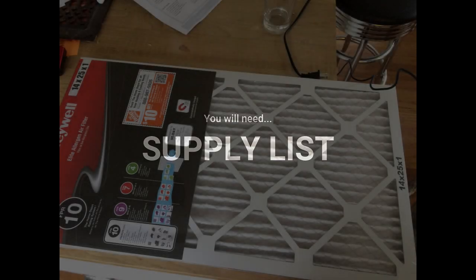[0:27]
If you were inspired to make masks for the COVID-19 workers, I wanted to give you some things to consider and a how-to guide. The mask has some ability to filter virus and bacterial size particles. I am an orthopedic surgeon, and I will give you some of the scientific articles and information that led to these recommendations. And at the end, of course, a disclaimer.
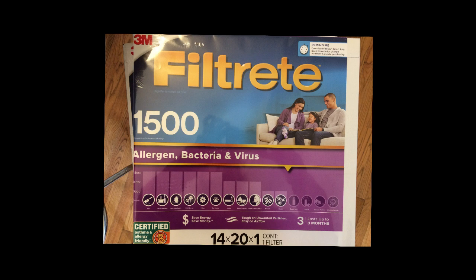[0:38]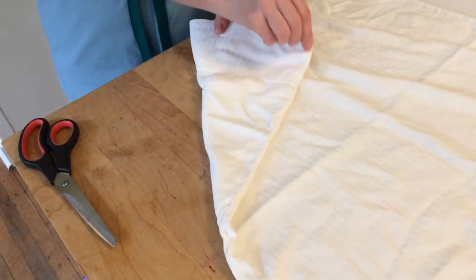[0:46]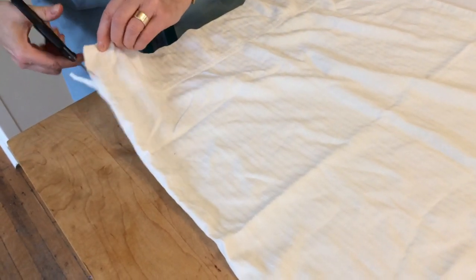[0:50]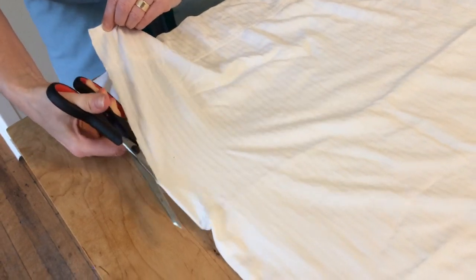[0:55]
Supply list. I will give you a formal list at the end, and you can download it from our website. You will need an HVAC filter, the kind you use for air conditioning vents. I recommend the MERV 12 to 14 or FPR 9 to 10 or 1500 MPR rated filter, like the two that are shown. You will also need some cotton material. I recommend a light colored 100% cotton pillowcase, like this one works well.
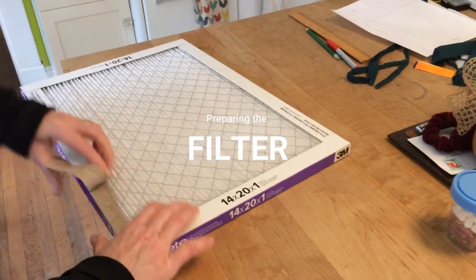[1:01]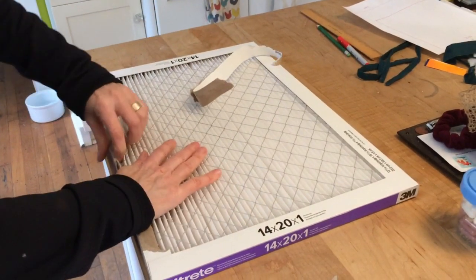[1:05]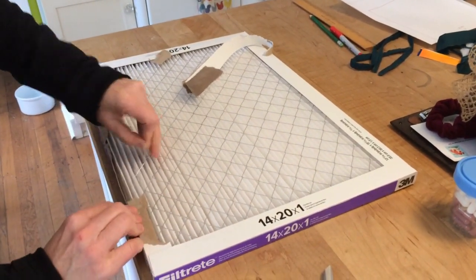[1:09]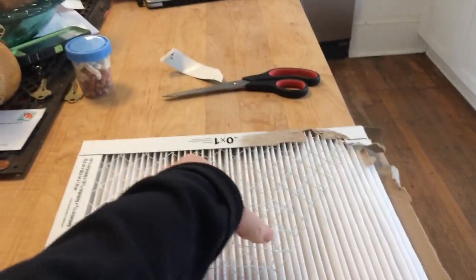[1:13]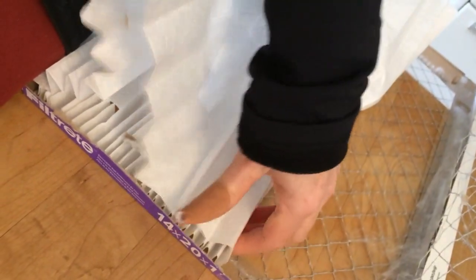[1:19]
You want to remove the filter material from its casing. Depending on the type, you can use scissors or wire cutters as needed. The wire edges can be really sharp, so be careful. The Band-Aid on my thumb is where I poked myself with the wire.
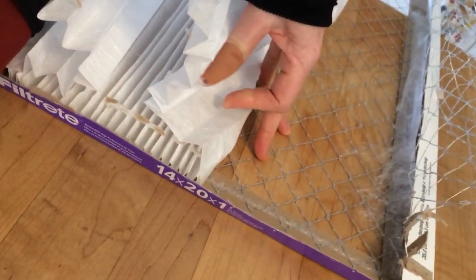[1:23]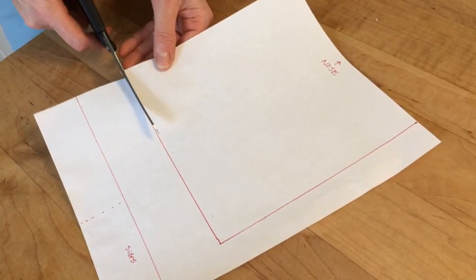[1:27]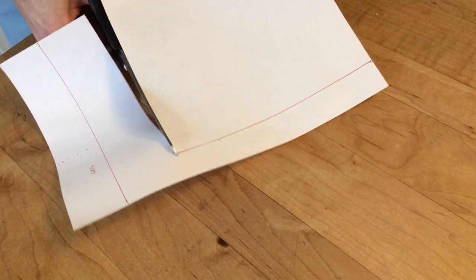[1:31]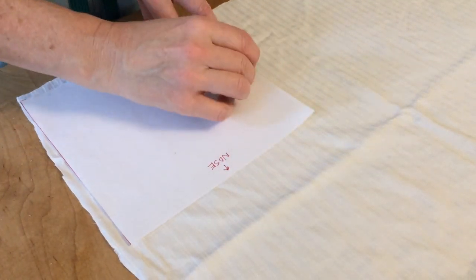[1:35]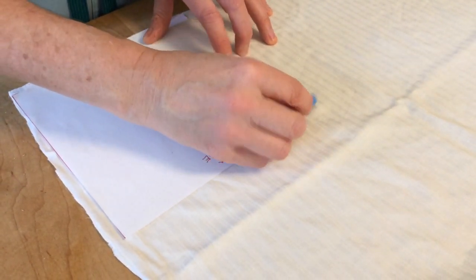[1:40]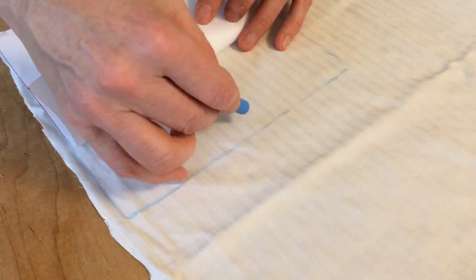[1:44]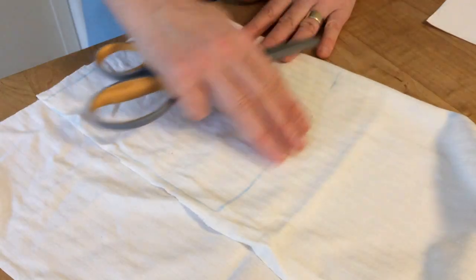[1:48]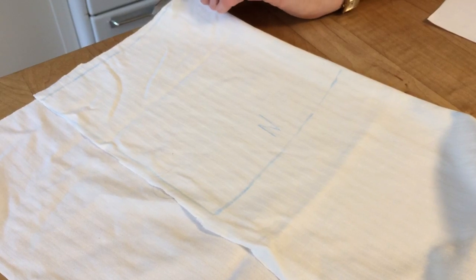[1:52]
You will need to cut your template. It will be 7 1/4 inches wide by 7 1/2 inches long. You can just print the template from our website if you like. The long, narrow part at the bottom is for templating the edging and ties. I marked N for nose to keep the orientation straight before I fold the fabric and cut it. So I folded the fabric so it's double layer, and now I'm going to cut out the square.
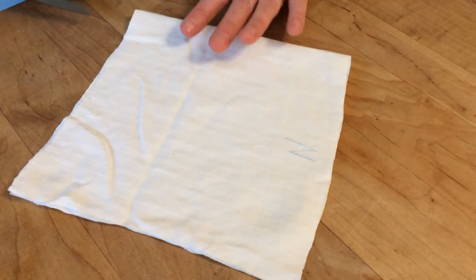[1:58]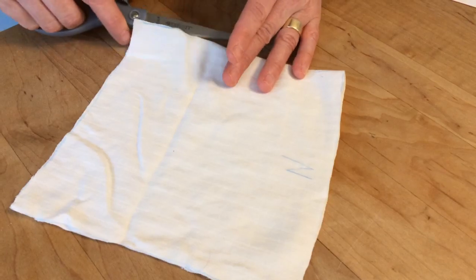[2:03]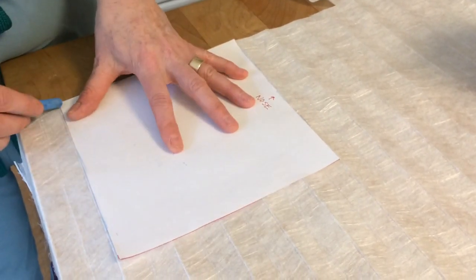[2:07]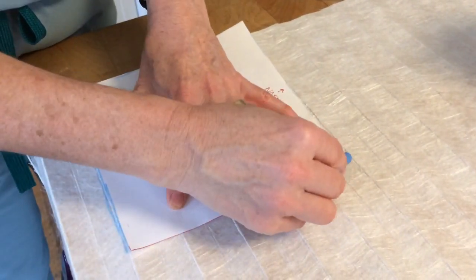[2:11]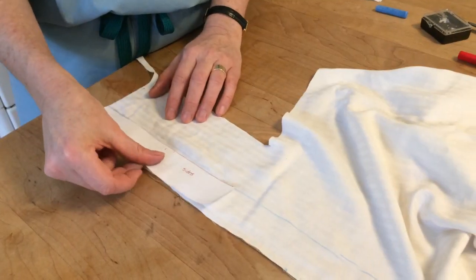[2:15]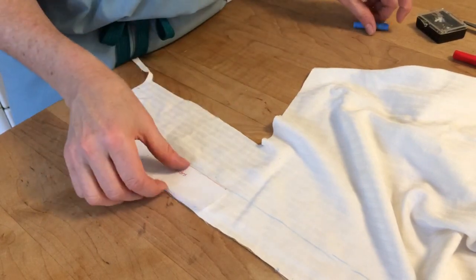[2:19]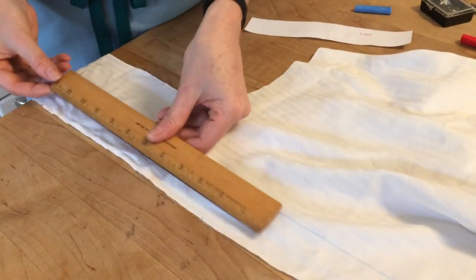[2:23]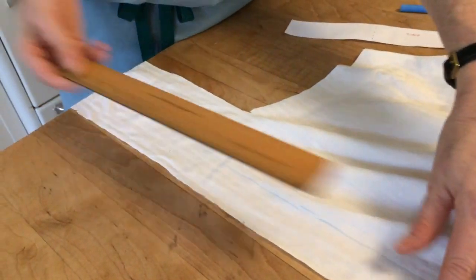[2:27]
Now just cut the fold so you have two squares. You're going to flatten the filter out by putting weights on either side and holding it down, marking it with chalk, and then cutting out one square of the filter material. You will use the narrower template piece to mark out the ties. You need to cut two strips that are at least 37 inches long. I made my ties 43 inches. Sorry about the guinea pig squeaking in the background.
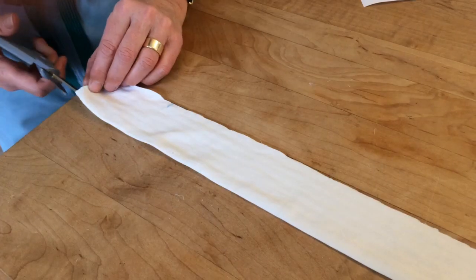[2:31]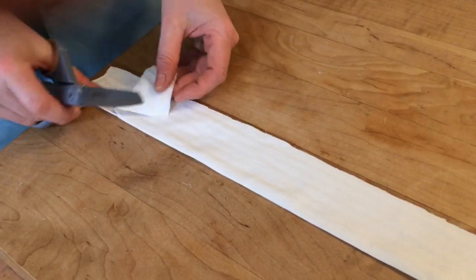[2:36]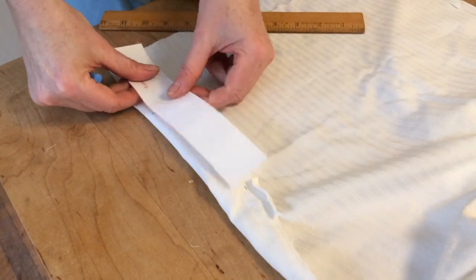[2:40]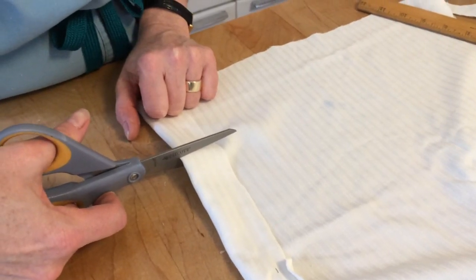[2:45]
I just folded the fabric in half and made two long strips, and I'm cutting along the fold to separate out the two. Now we will cut two separate 4-inch side trim pieces. The dotted line on the template can be used to mark these.
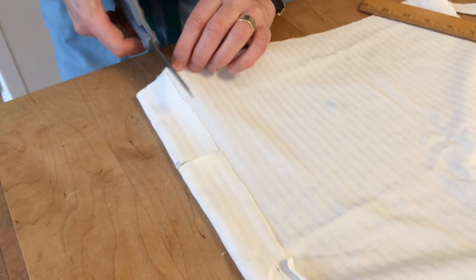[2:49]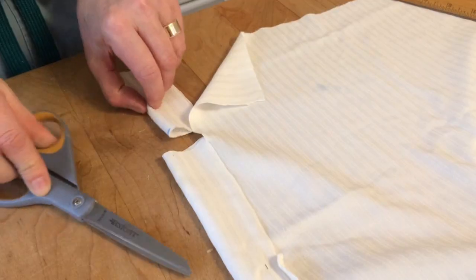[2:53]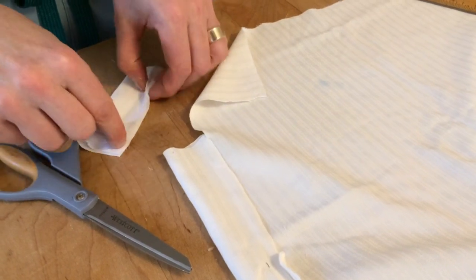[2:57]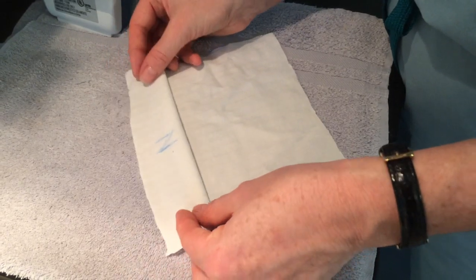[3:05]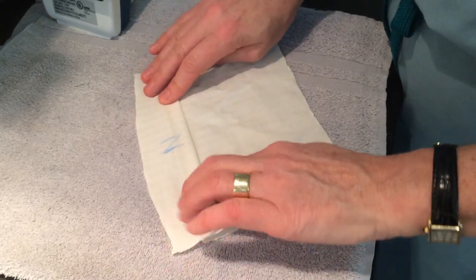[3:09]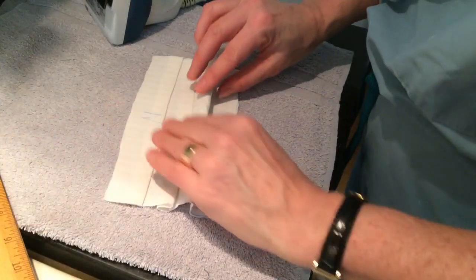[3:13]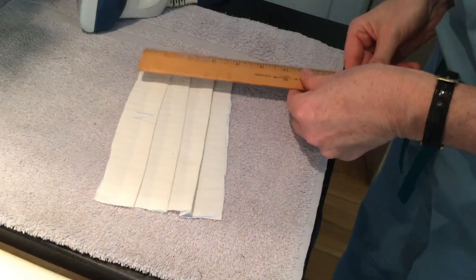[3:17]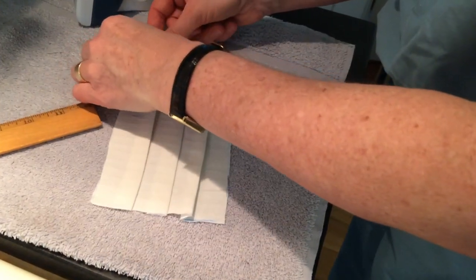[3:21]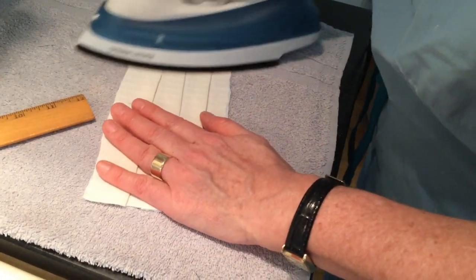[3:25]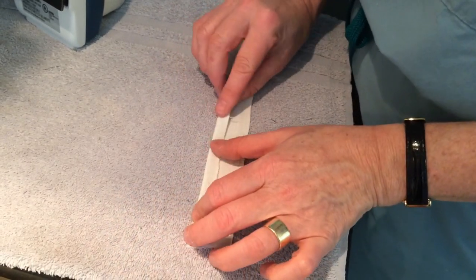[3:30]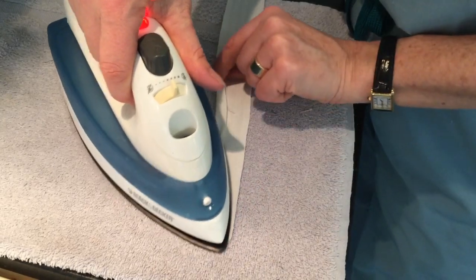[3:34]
One of the reasons I like all cotton is that it irons well. We are going to iron pleats and the fold on the edging so it will be easier to sew. Don't iron the filter. We can make pleats in it without ironing. You want to adjust your pleats so that the side will measure 4 inches. If it's not perfect, you can adjust it with the iron, as you can see. After you iron pleats in both square mask pieces, you will iron the trim and the tie pieces like this.
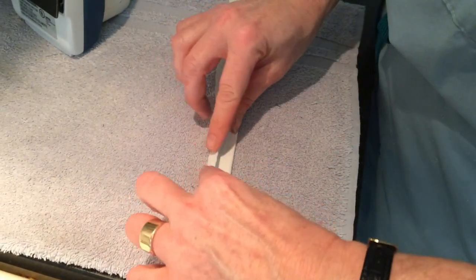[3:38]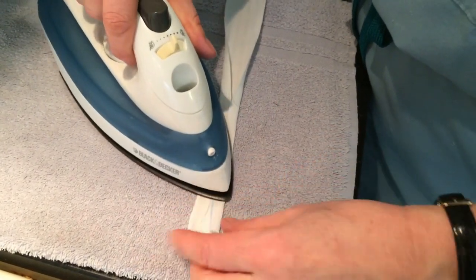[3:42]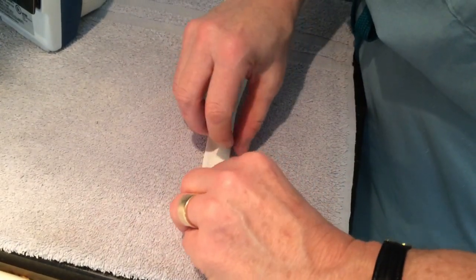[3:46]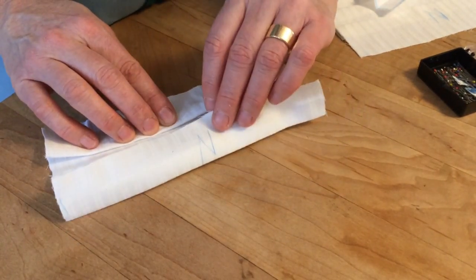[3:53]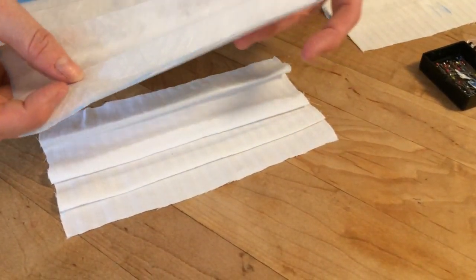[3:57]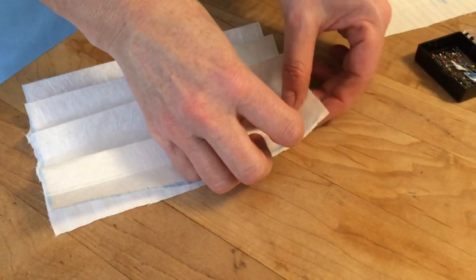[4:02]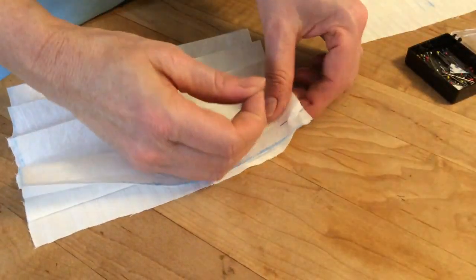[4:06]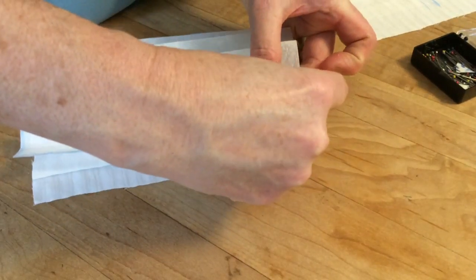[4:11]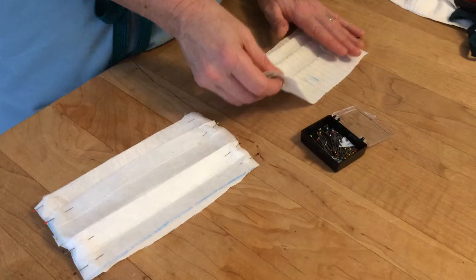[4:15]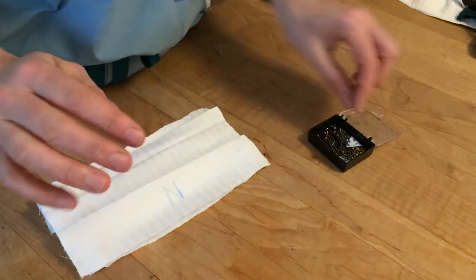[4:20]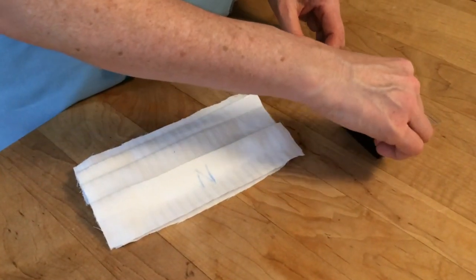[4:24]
Now we will put the layers together. You have to make the filter have pleats in it so that it also matches the 4-inch side length, and then once you have it like you want, pin it to the pleated cotton layer with a cotton layer on either side of it. Now you have a piece of cotton on either side of the filter, and we're going to pin these together on each side so that the pleats all lie flat.
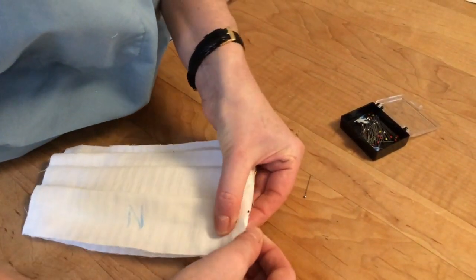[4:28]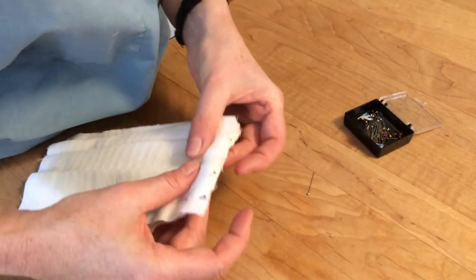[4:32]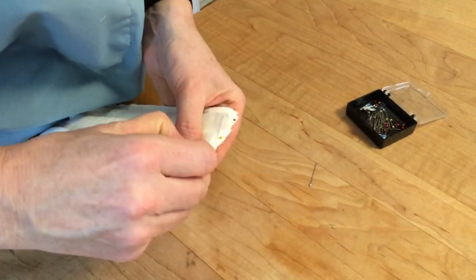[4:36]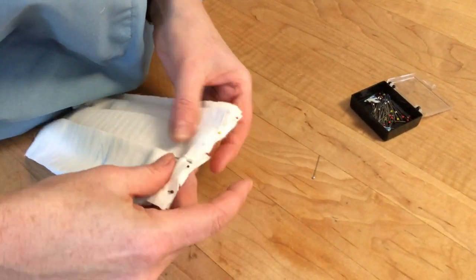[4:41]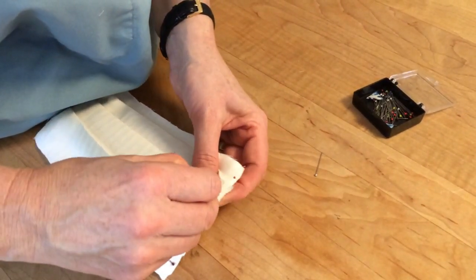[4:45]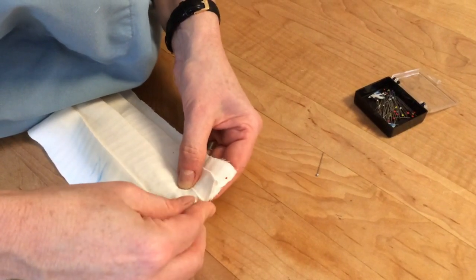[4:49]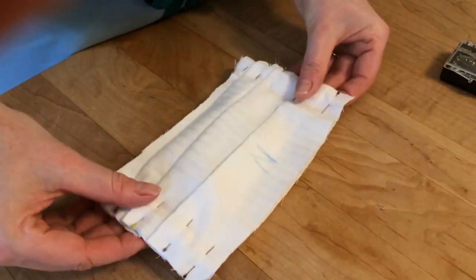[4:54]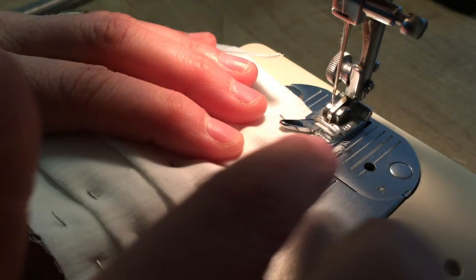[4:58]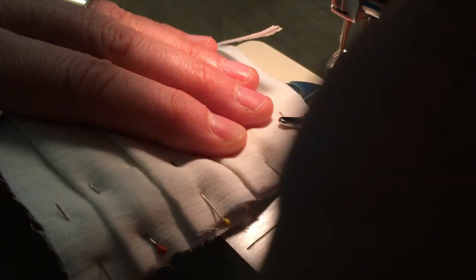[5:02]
I first pin the two layers together, and then when I put the other layer on top, I just pulled the pin out and pinned it over the three layers, as you can see. As you can see, I've done this on both sides, so it's nice and flat. Now we're going to run a straight seam across each side of the mask to hold the layers together.
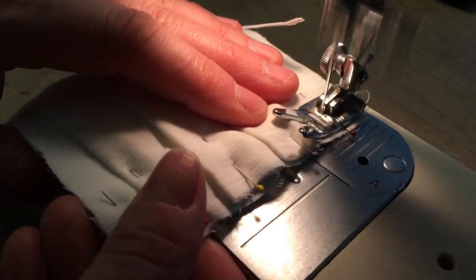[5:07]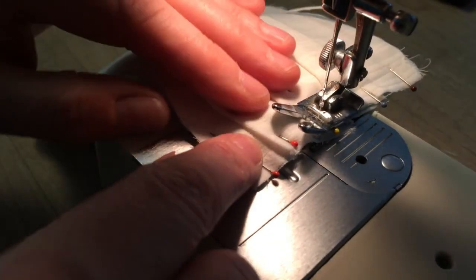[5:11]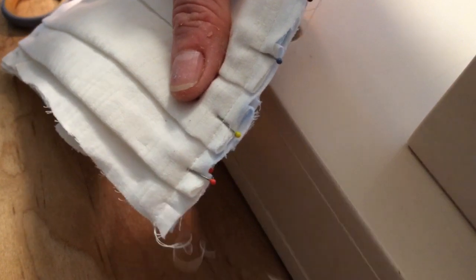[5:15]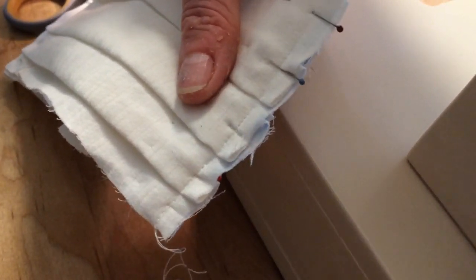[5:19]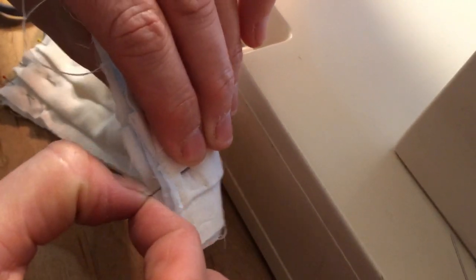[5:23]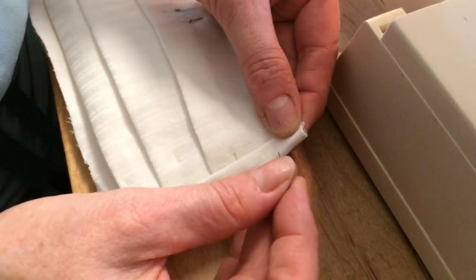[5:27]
Now remove the pins. Make sure and check for hidden pins, because once you put the edging on, you can't get them out. This is what I found here. Now is a great time to cut the threads.
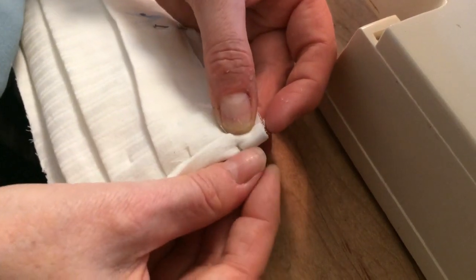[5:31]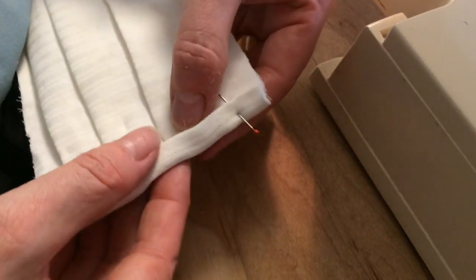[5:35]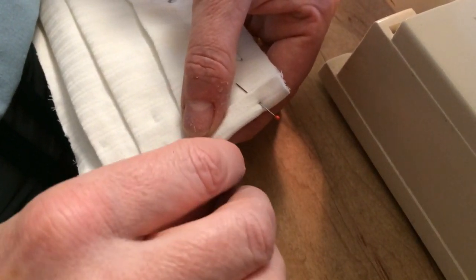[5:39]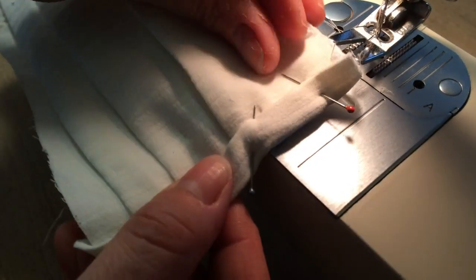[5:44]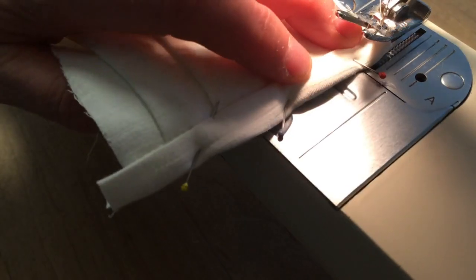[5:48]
Take the two small side trim pieces that you ironed, and we're going to put them together on the mask with pins. Once we have this pinned, then we're going to run a line of stitching across the side of the mask. I like to use zigzag, but you could do it straight.
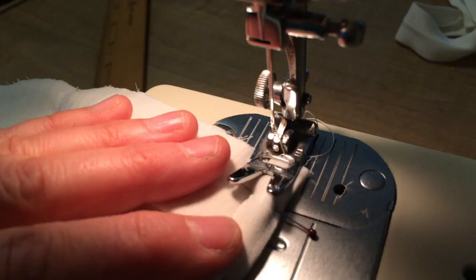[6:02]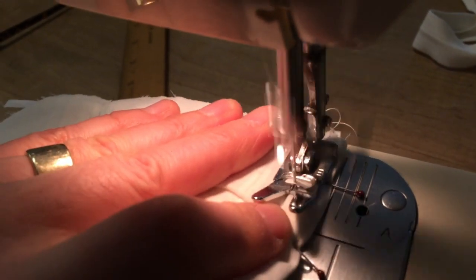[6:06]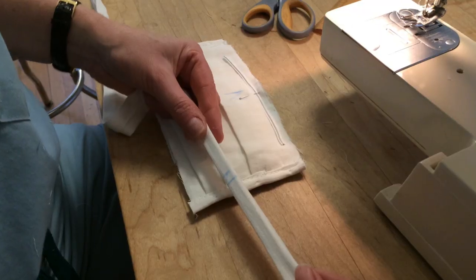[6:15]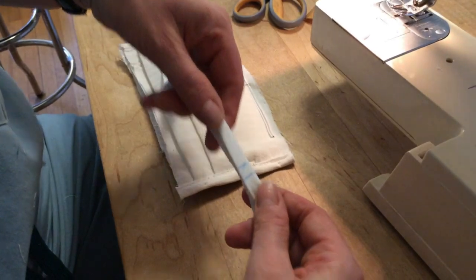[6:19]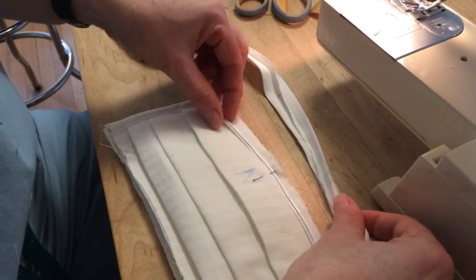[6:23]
Now do the other side and cut the edge off as it's a little bit of extra. Now you're ready to add the ties, which are also the trim for the top and the bottom. Find the middle of the tie and mark it with chalk, and you'll line that up with the middle of the mask. This is a twist tie.
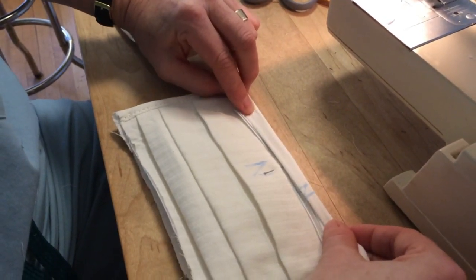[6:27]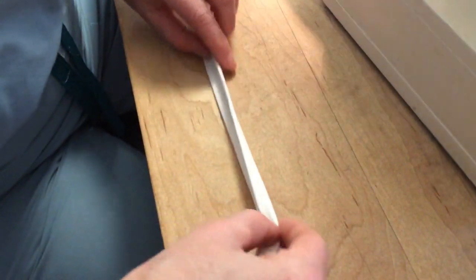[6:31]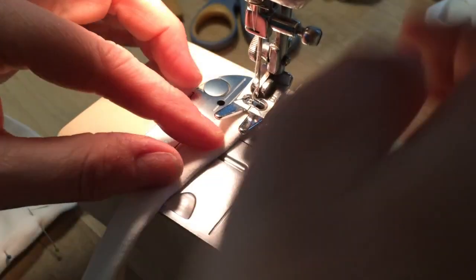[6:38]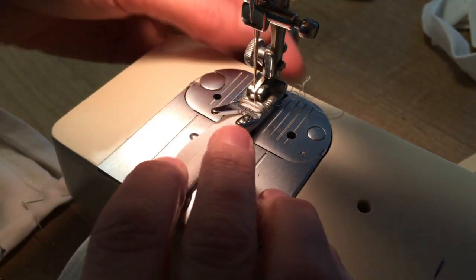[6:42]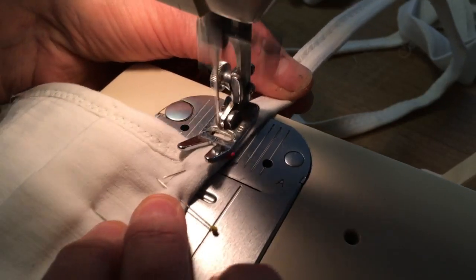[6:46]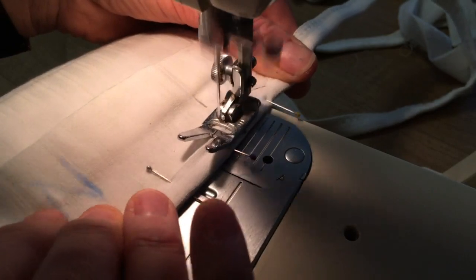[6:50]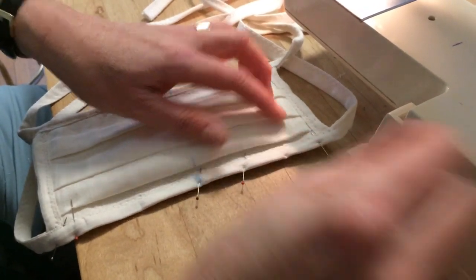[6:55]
Now I have the long ties, and I'm folding them together like we did when we ironed them, and we're going to pin these to the top and bottom of the mask. This is where you have the option to add a twist tie, which gives the nose bridge some ability to be molded, and you pin it in when you put the edging over it. Now just remove your pins.
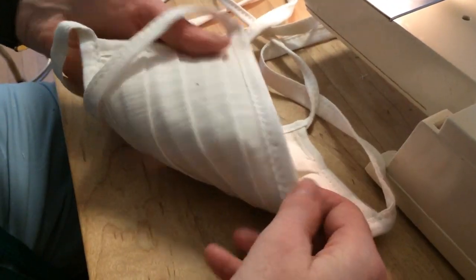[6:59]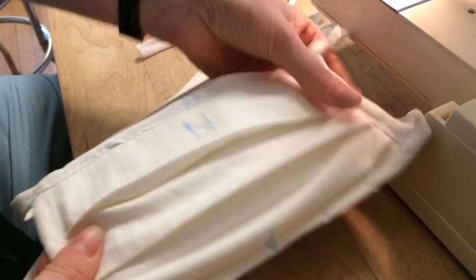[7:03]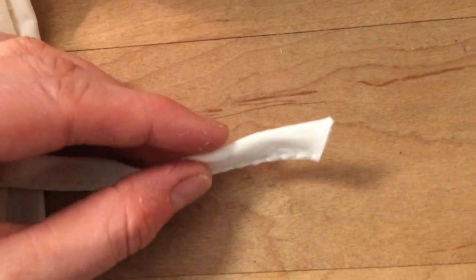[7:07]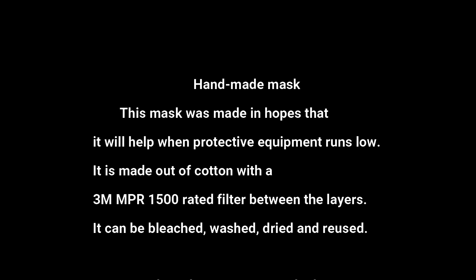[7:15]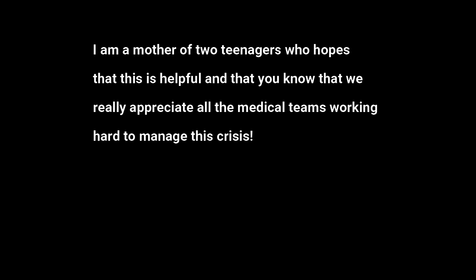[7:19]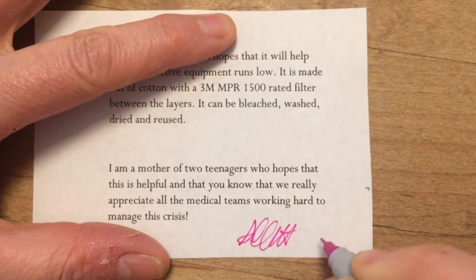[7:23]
And the last step is just to finish the ends. I just cut these off at an angle, but you can also hand stitch them so they don't fray. I do think you should make a tag that states what the mask is made of and specifically the type of filter you used. I would put a note with a short bit about you, because it's nice to know when someone is cheering for you. The punched hole allows you to attach it to the tie.
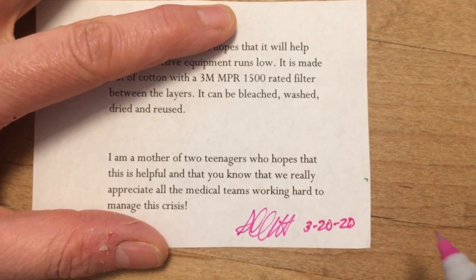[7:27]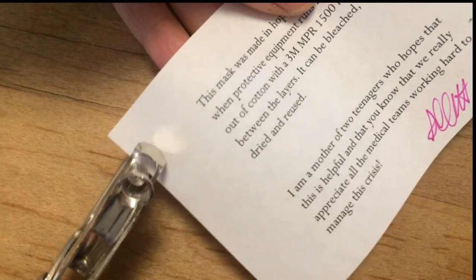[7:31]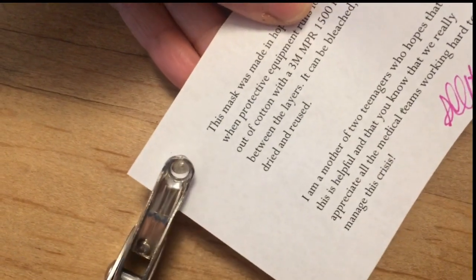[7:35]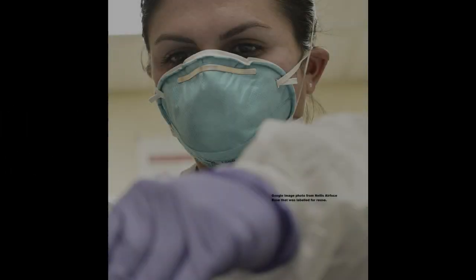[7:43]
Here is the background on the rationale and scientific information that contributed to this design. The high-quality filtering mask that you see in the news is the N95 mask. It filters out 95% of particles. It typically feels a bit like stiff paper. For the N95 mask to work, it really has to fit snugly without leaks. It takes more pressure to push the air through the mask. These masks are reserved for very high-risk hospital activities, like working on a COVID-19 patient's airway.
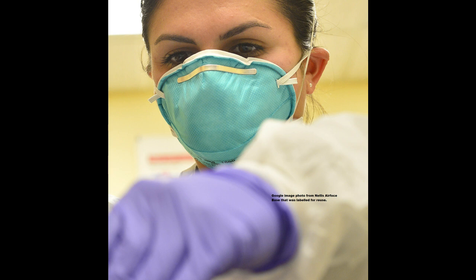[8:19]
The rest of hospital work is relegated to regular disposable masks, the same type that we wear in the operating room. These are not designed to filter out viruses or bacteria. They're really just designed to keep spit and respiratory droplets from landing on the patient or the instruments, and to be a general barrier to splashes on us. So, those of us who aspire to make a mask for the COVID-19 workers are not going to be able to make an N95 mask, because even if we could get the materials, we cannot get it to fit people's faces. And when it does not fit, the air just goes in and out on the sides.
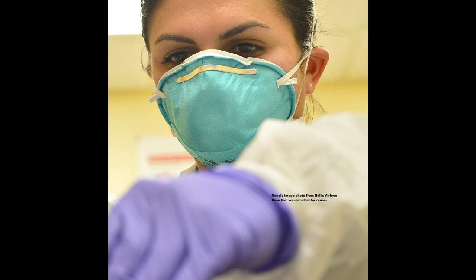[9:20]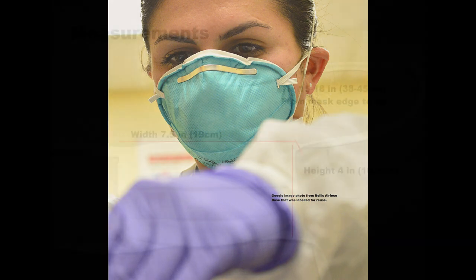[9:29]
With that in mind, the ideal mask for hospital workers has some small particle filtering ability, is comfortable, is washable, and fits a variety of shapes and sizes. HVAC filters have a material that fits this requirement. A MERV 14 grade air conditioning filter removes at least 75% of bacteria and virus-sized particles. Additionally, we know that laundering with bleach or laundry detergent that has bleach in it will remove nearly 100% of pathogens, which would be an option that would allow reuse of the masks. We made two mask prototypes, and we used two different brands of AC filter with the same grade of filtering. They both washed, dried, and sewed just fine.
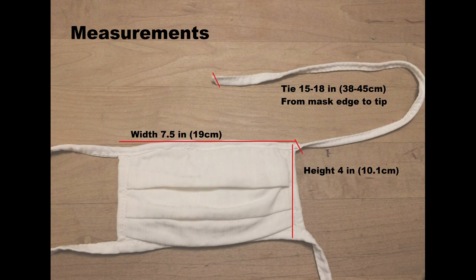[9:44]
Here are a few technical points. One, I would not iron the AC filter, just the cotton material. Two, the wire on the AC filter can be sharp and can poke your skin. Three, a twist tie. I got one I used from a paper disposable mask that I had already run through the washer and dryer. It is possible that the dryer would melt a plastic twist tie, but it's a nice thing to add to the mask if you can. And the fourth tip, don't ever put a mask on someone who's having a hard time breathing. It just makes it harder for them to breathe. Five, I will post links to the template, measurements, materials list, and bibliography of references with the video.
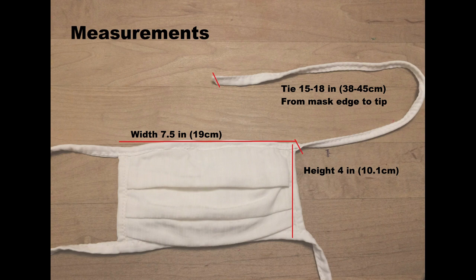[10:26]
And one last point. I hope that the quilters and sewers of the world will take this as a starting point and make the mask design even better. I'm sure you realize that COVID-19 coronavirus testing has not been done on this mask, or really many of the masks. These are extraordinary times and they call for creative solutions. We can use scientific articles and knowledge to inform these solutions. There is no guarantee that this mask will protect you or a loved one or a hospital worker from the coronavirus. Remember, most transmission is via hands, touching, and surfaces, which is why hand washing is the number one preventative measure.
This video was made entirely to help people around the world with the enormous challenge presented by a pandemic. This video was not funded and is not intended for sponsorship or commercialization. This is intended for home volunteers that simply want to do something to help.